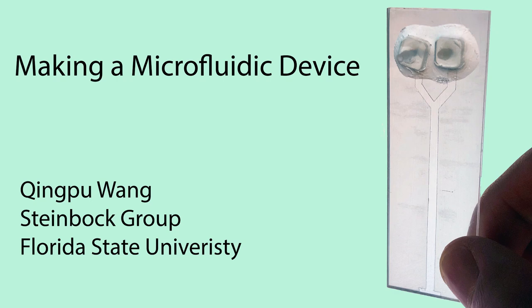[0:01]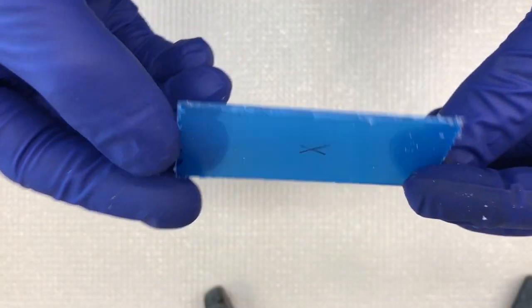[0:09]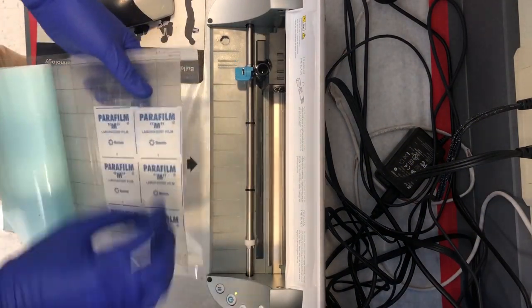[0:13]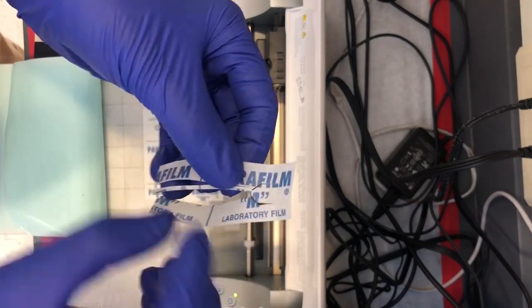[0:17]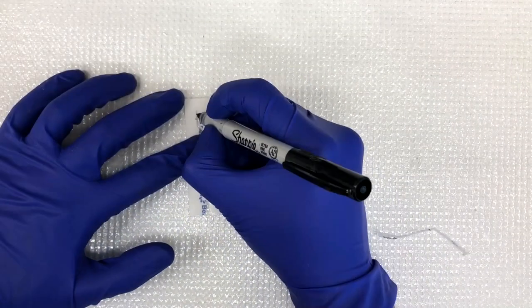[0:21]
This video will show you how to make a microfluidic device. First, we cut a rectangular plexiglass plate using a saw or a 3D milling machine. Then, we make a Y-shaped pattern on the parafilm membrane using a PC-controlled cutting tool. When we align the membrane with the plate, we mark the positions of the inlets.
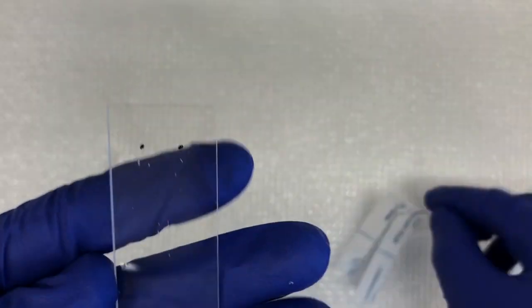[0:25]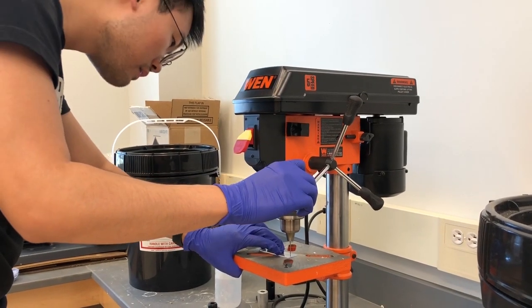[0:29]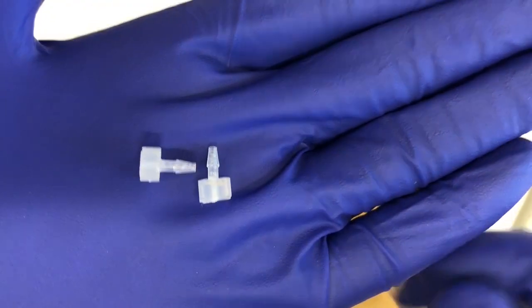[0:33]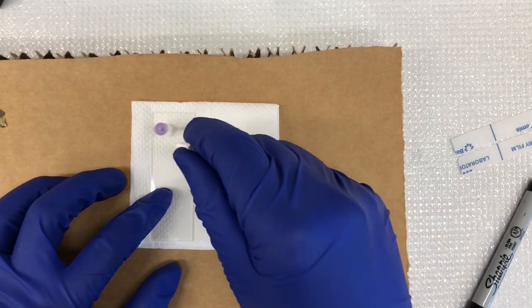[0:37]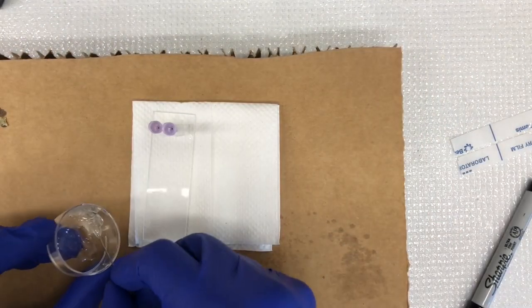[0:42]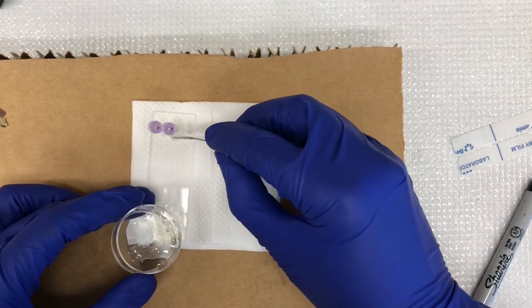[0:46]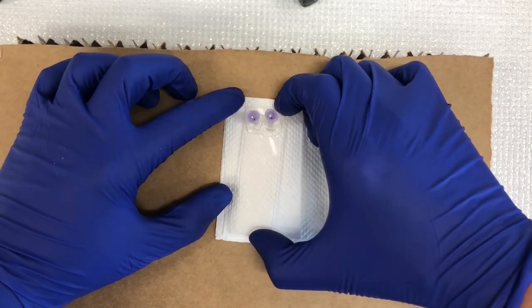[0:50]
Next, two holes are drilled using a drill press. To create inlets of the microfluidic device, we use two syringe needles to fix the barb fittings through the holes, and then glue them on the top plate using an epoxy glue. Once the glue solidifies, we are ready to assemble the microfluidic device.
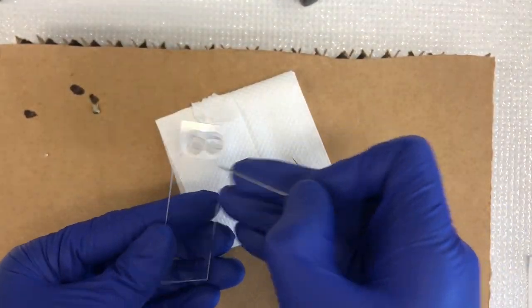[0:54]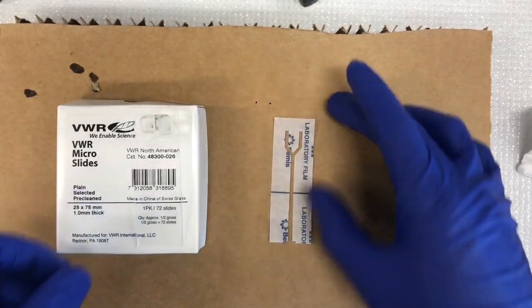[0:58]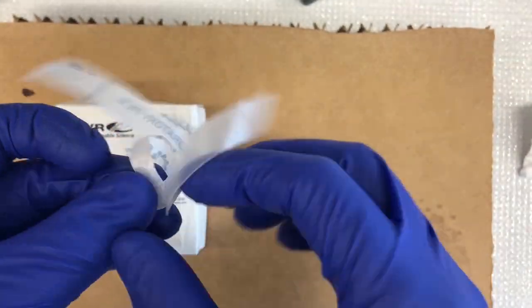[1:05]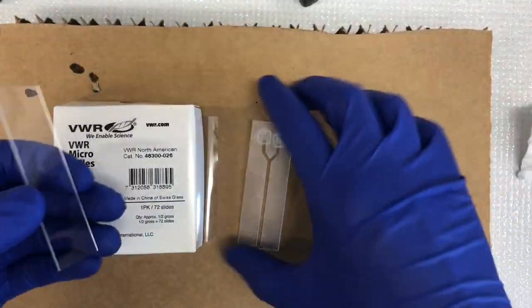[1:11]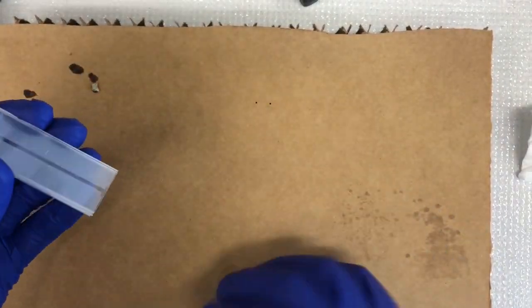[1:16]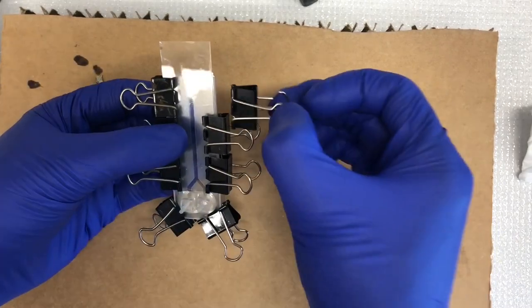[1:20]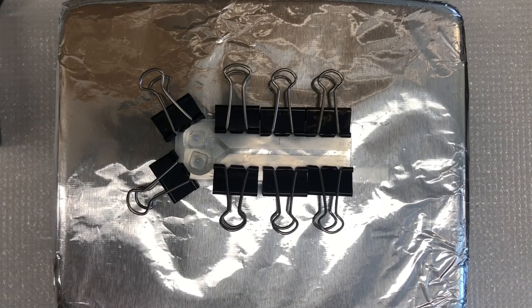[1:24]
Now we have a top plate with two inlets, parafilm membrane with a Y-shaped pattern as the channel, and a microscope slide. The three layers are then assembled, fastened by binder clips with two pieces of micro slides for cushioning, and heated on a hot plate for 3 minutes until the translucent parafilm membrane turned transparent.
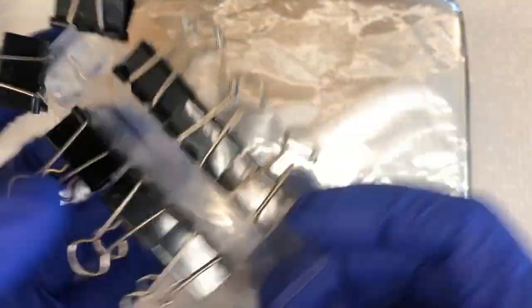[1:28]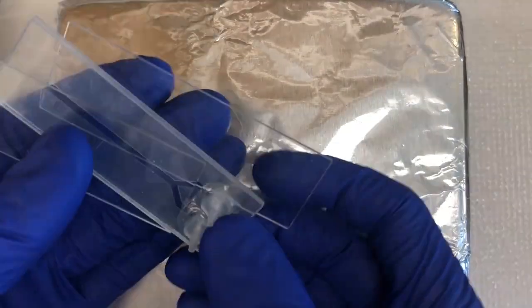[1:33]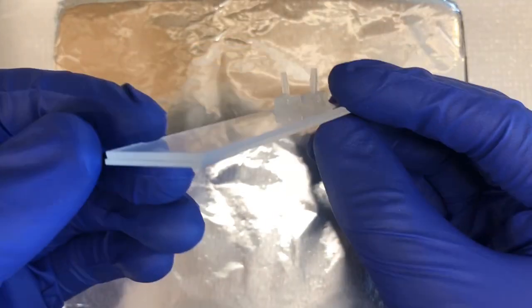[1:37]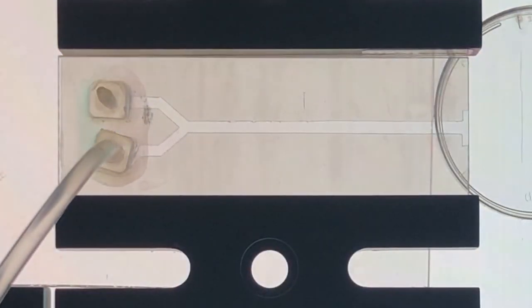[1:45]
After cooling the system at ambient conditions, the resolidified parafilm membrane acts as an adhesive and secures the two plates firmly. Now we have made a microfluidic device ready to use. There are various uses of microfluidic devices. The research in our group involves the study of precipitation reactions in the microfluidic device.
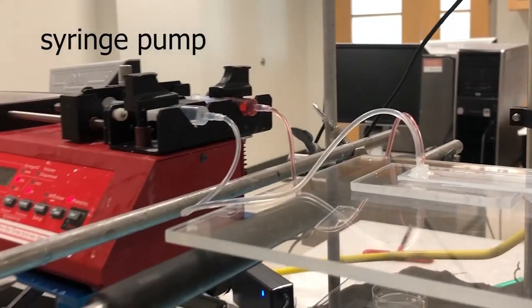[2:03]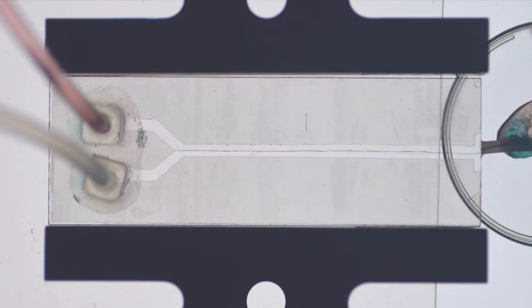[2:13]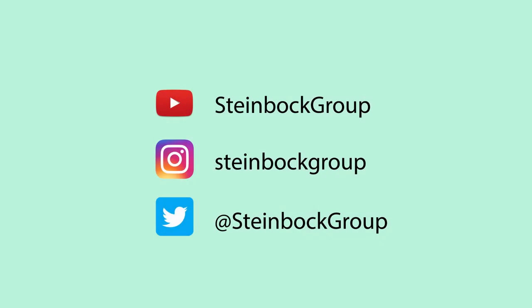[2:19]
In a typical experiment, the channel is initially filled with DI water, and then two syringes containing the reactant solutions, sodium hydroxide and cobalt chloride in this example, are connected to the barb fittings. After the syringes are discharged using a programmable syringe pump, a thin precipitate membrane forms at the interface of the reactant solutions in the microfluidic channel, and the precipitate membrane thickens gradually when the solutions are continuously injected into the microfluidic device.